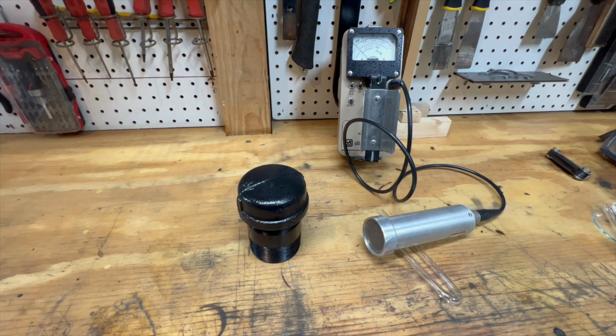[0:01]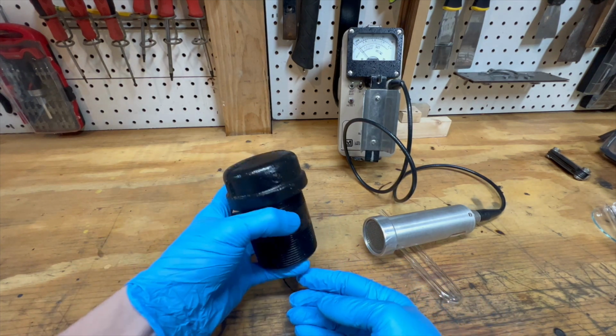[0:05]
I hold a lead pig with a highly radioactive source here. Welcome to Wheeler Scientific, and in today's video, I'm going over how and why I made this. Firstly, what is a lead pig?
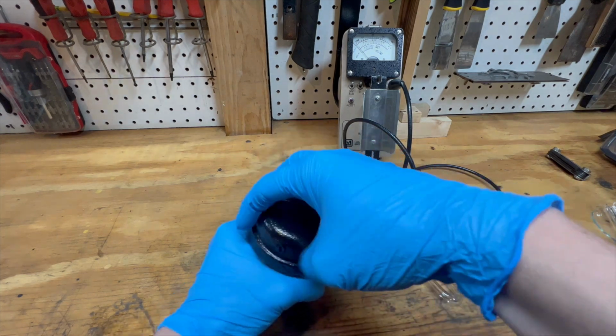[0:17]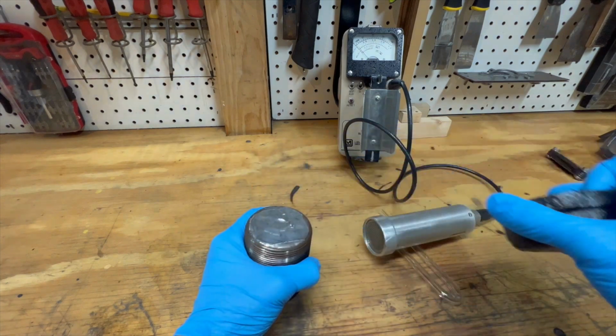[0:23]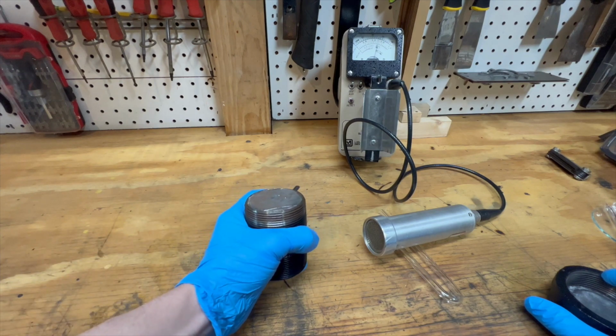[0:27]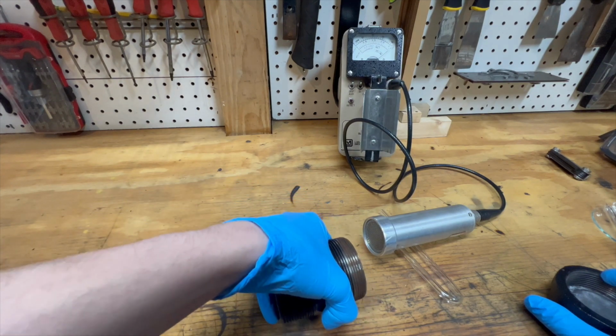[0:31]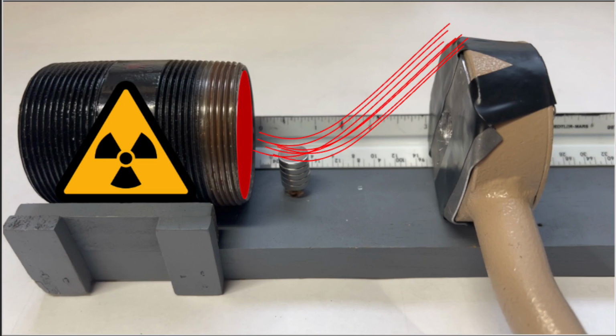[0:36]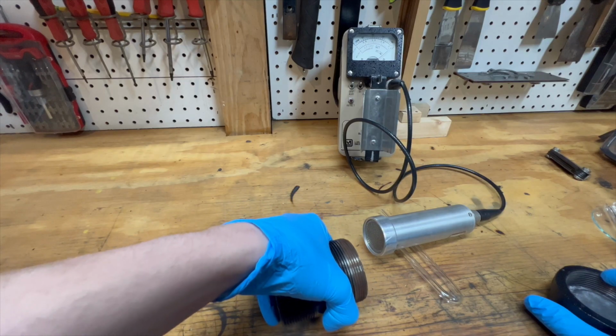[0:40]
A lead pig is a device used to store or transport radioactive items safely. I made this pig a while back. The original intent was to create a neutron source using radium and beryllium. I scrapped that idea to make a radium point source for nuclear demonstrations. I have so far used this source for a few of my videos, such as the inverse square law and bending radiation. The fact that the source can only point and output in one direction makes it safer and easier for such demos.
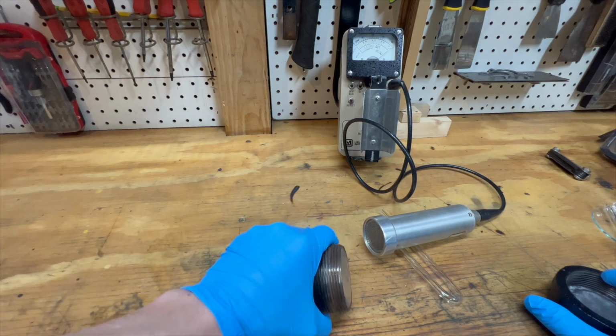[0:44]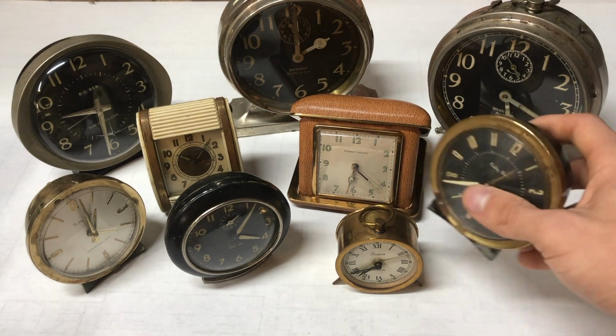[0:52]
As I said previously, this lead pig contains radium. I collected the radium from antique alarm clock hands I bought off of eBay. I placed them into the hole I made in the pig and sealed it with foil tape. The tape does stop some radiation from escaping, such as alpha and low beta particles, but other than that, the gamma and high energy beta just passes right on through.
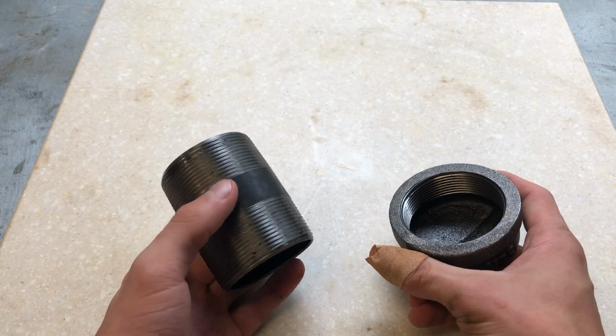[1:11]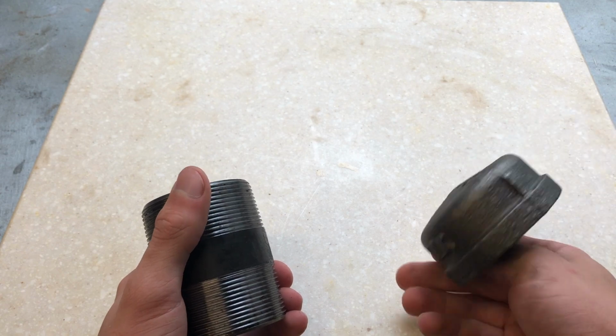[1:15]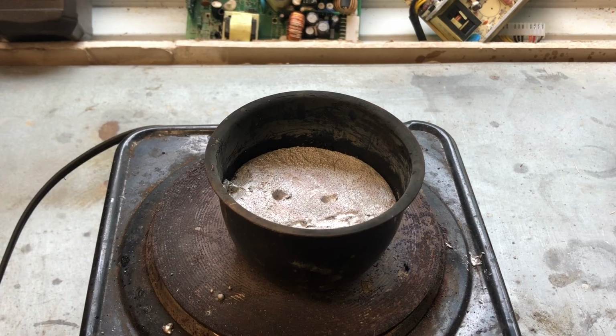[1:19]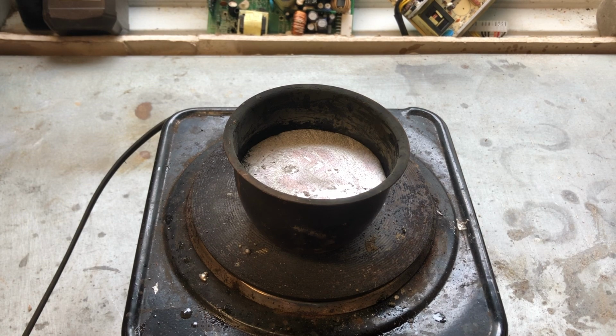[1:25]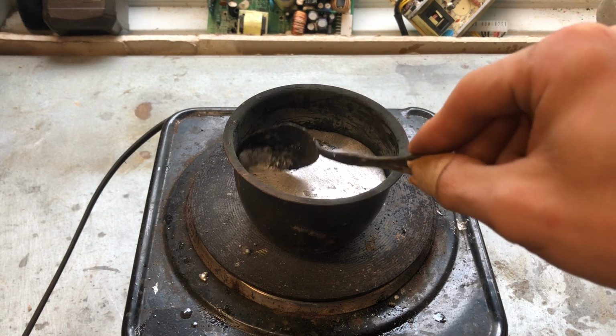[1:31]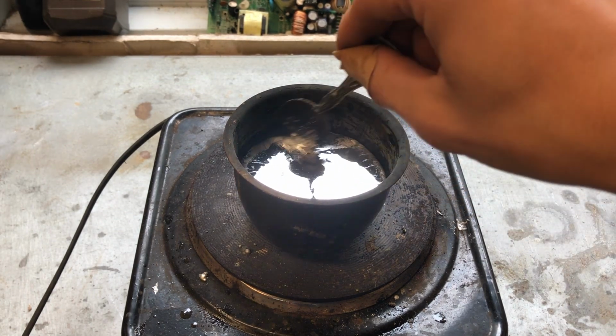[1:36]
The first step in making the pig was choosing the body for it. In this case, I used a 2-inch black pipe nipple that was 3 inches long and a 2-inch pipe cap. I then melted up some lead. The lead I have here is scrap lead that I got from tire weights, fishing weights, and some solder. Some oxidization formed while melting, and I used a spoon to remove it. The nice thing about lead is the low melting point, which allows it to be easily melted on a simple hot plate.
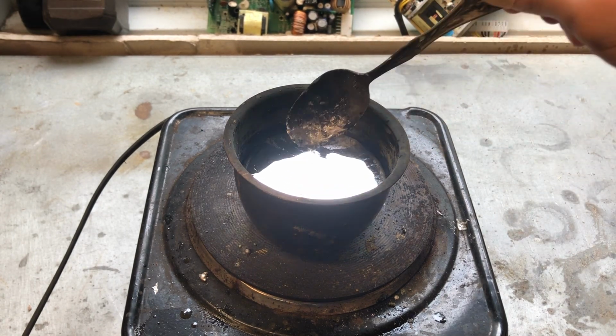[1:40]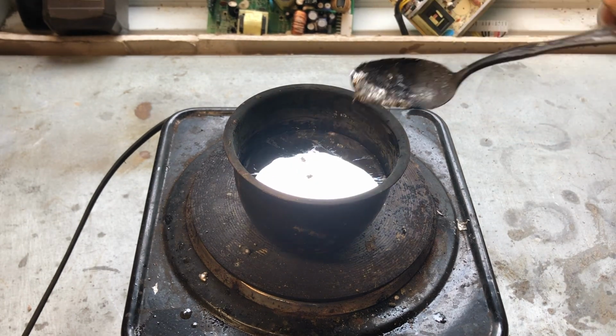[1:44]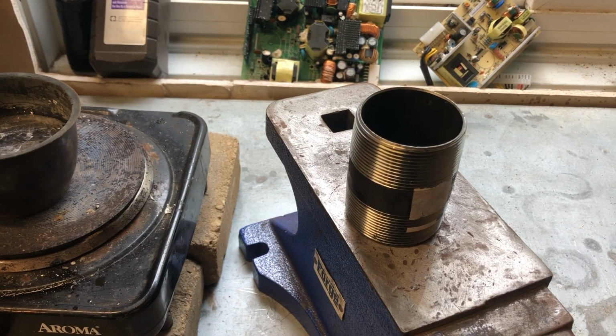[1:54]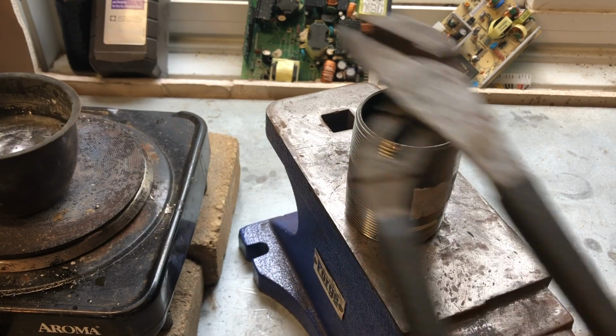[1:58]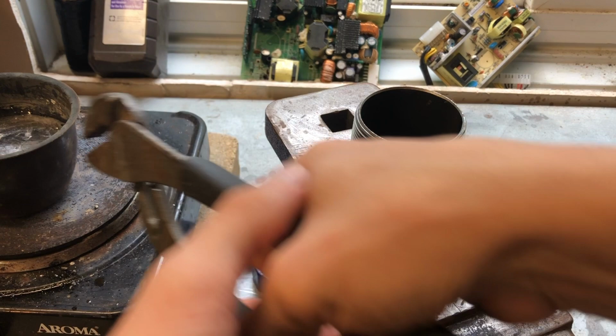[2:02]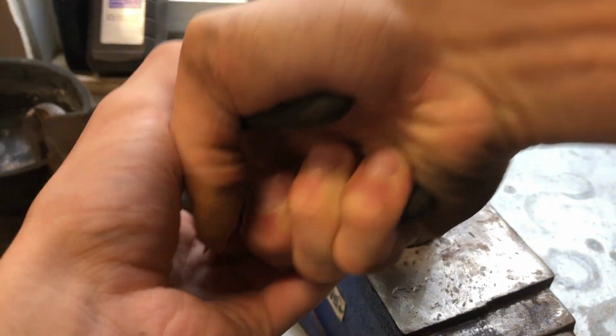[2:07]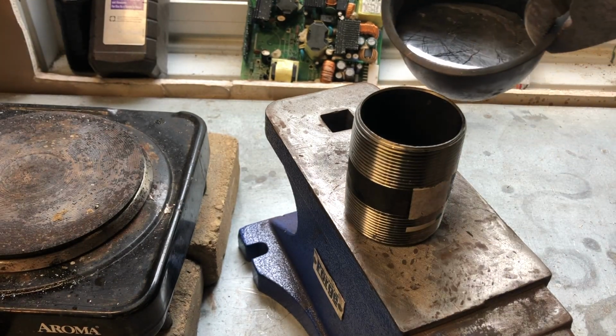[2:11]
I placed the black pipe nipple onto an anvil. The anvil acts as a thermal sink. When I pour the lead into the pipe, it will solidify almost instantly due to the coolness of the anvil. I did a few pours so as not to overwhelm the cooling, and I was worried about the lead escaping if I poured too much and it went onto the bench.
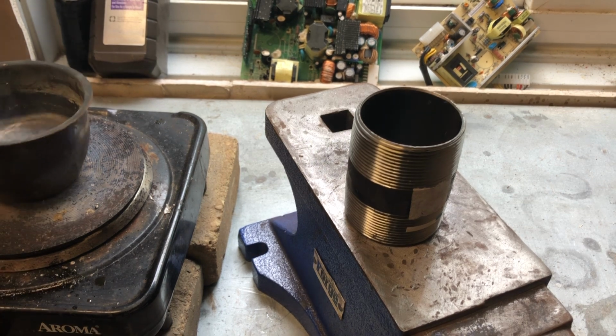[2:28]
Lead is used in nuclear shielding due to its high density. The high density stops the radiation. Density is related to how much stuff is in a given area. The more stuff there is, the denser it is. The more stuff in a given area, the more chances a nuclear particle has to interact with it, thus transferring its energy, stopping the particle.
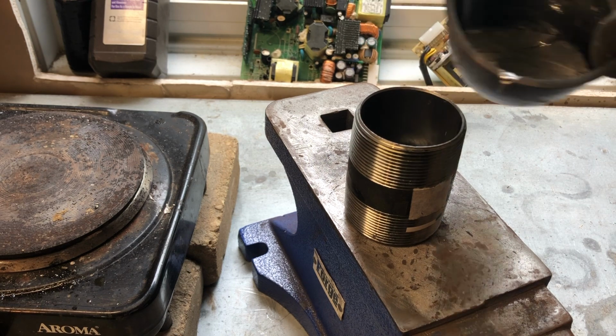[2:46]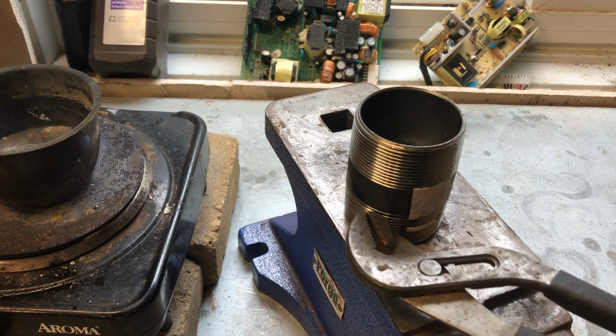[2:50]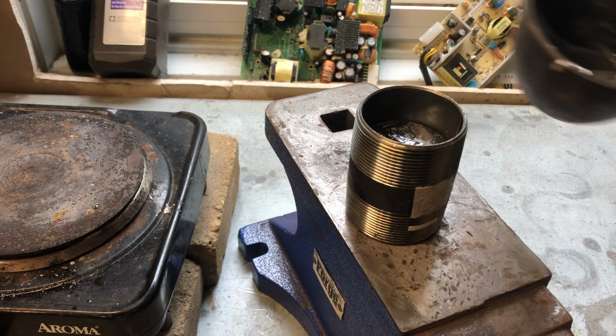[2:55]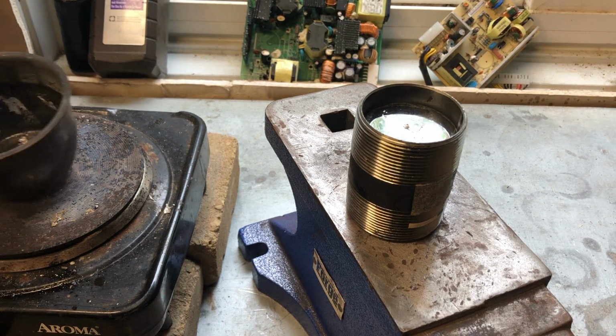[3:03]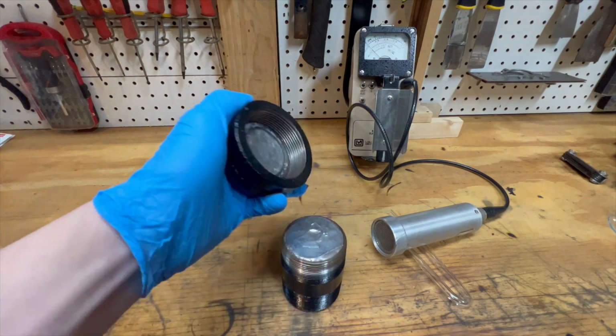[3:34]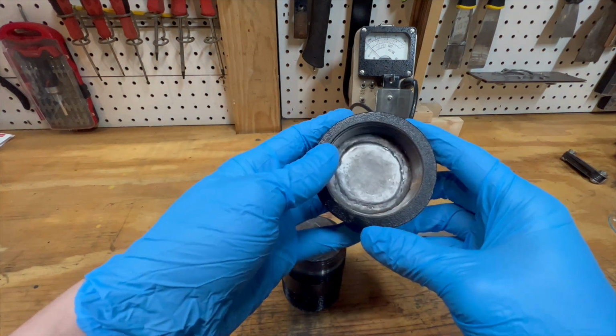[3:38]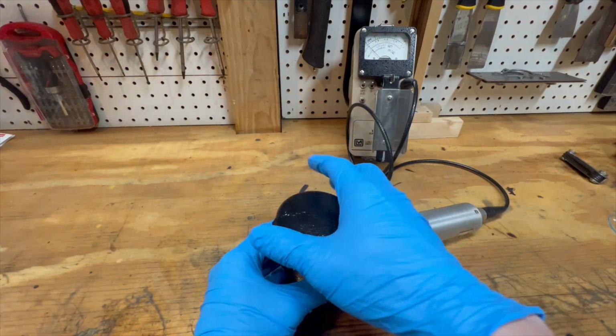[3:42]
I ended up not having enough lead, so I had to melt some more and pour it in. Lead likes to hold on to heat, so it took a while to cool. I then filled the cap with lead too. Without lead, the radiation could pass through the lid quite easily, and was measurable outside the container, and this is a no-no when it comes to lead pigs.
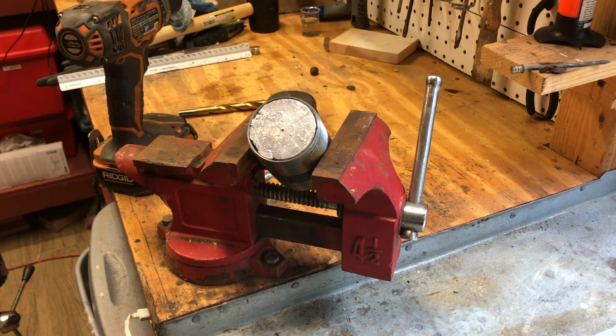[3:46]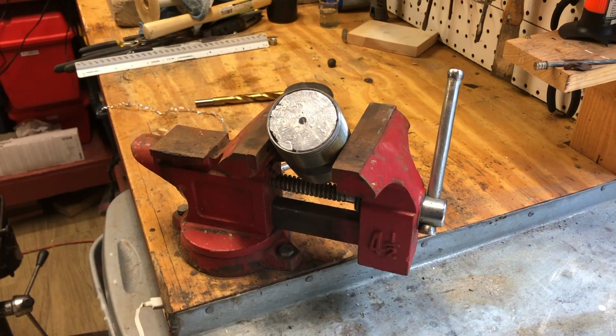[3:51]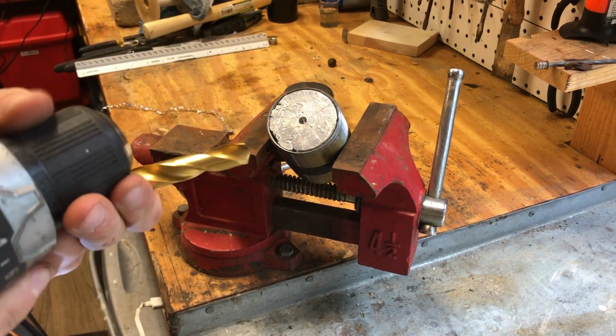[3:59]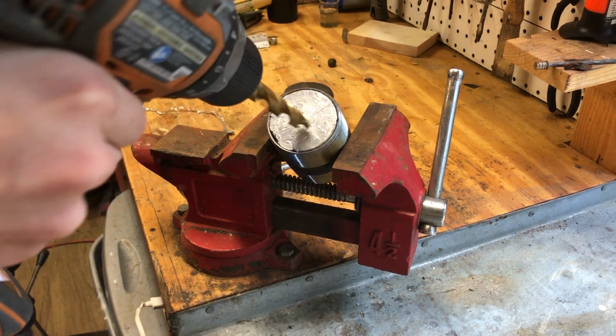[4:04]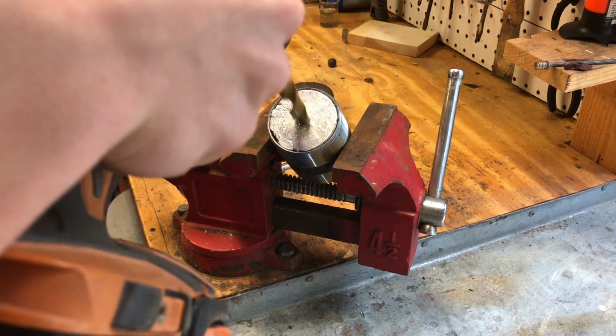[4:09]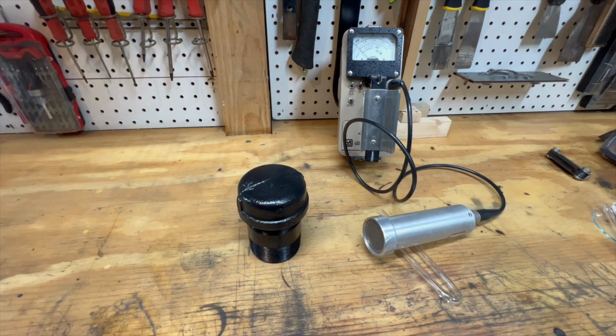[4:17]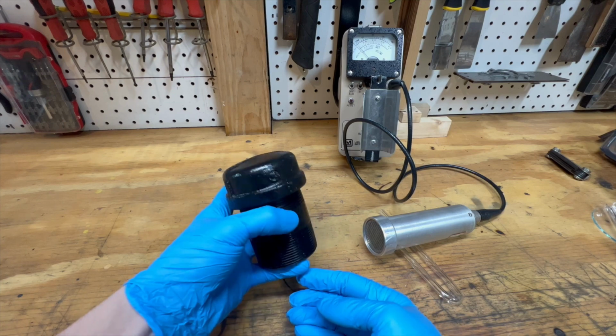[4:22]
Once cooled, I took it over to the vise. I initially wanted to store a vial in it, so I made the hole much larger than it is now. I refilled the hole with some molten lead and re-drilled it later on. With the hole done and the lid filled, I then spray painted it, protecting it from rust. 6 pounds of lead goodness, keeping radium safe inside.
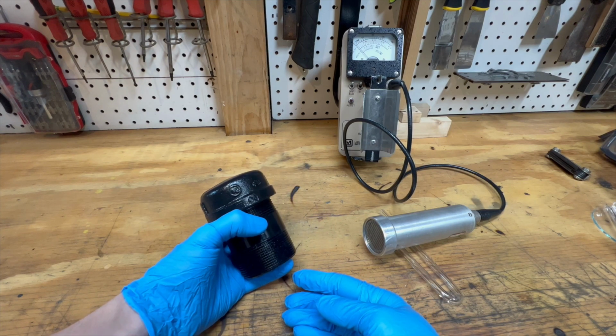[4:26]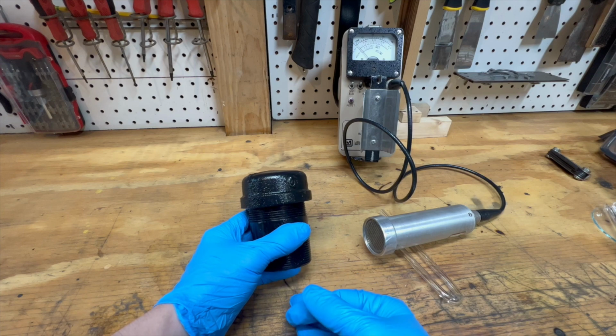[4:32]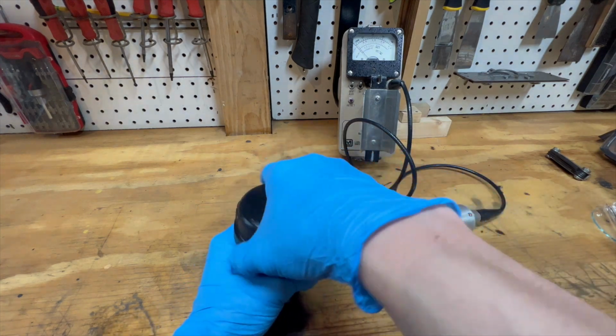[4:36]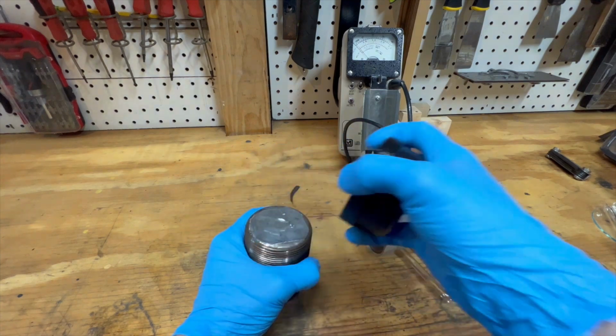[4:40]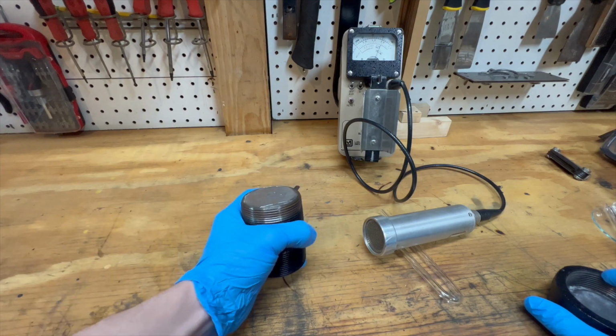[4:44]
Here's the final. Well, I don't know, but I've been told uranium ore is worth more than gold. I sold my Cadillac, I bought me a Jeep. I got that bug and I can't sleep. Uranium fever has done... uranium fever, it's spreading.